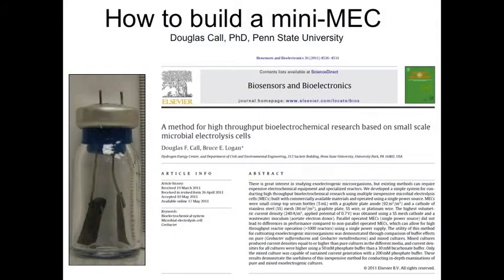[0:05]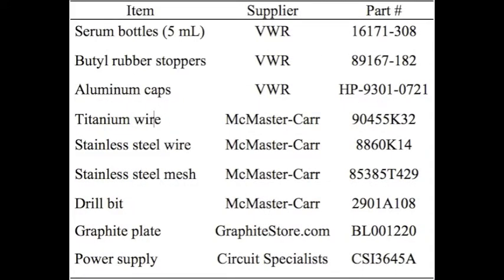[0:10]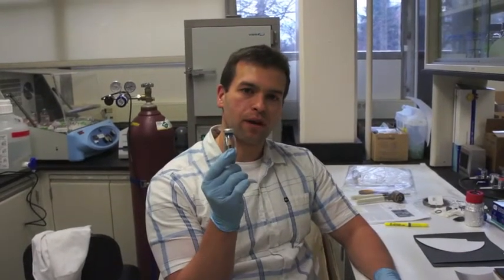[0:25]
My name is Doug Hall, and today I'm going to be talking about how you can assemble and build what we call mini-MECs, which are these small serum bottle-based MECs for doing basic work on bioelectrochemical systems in the lab.
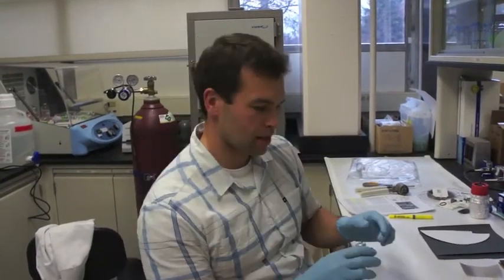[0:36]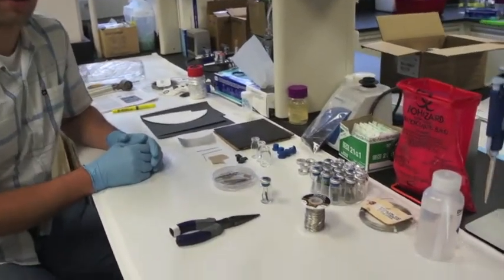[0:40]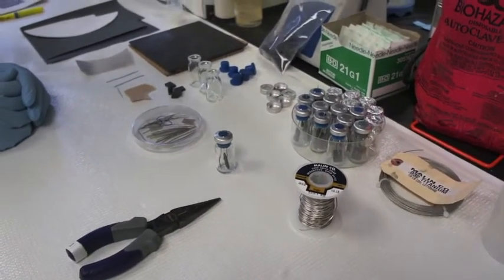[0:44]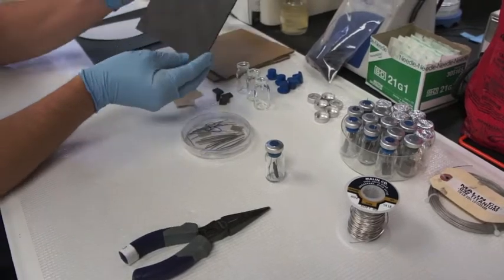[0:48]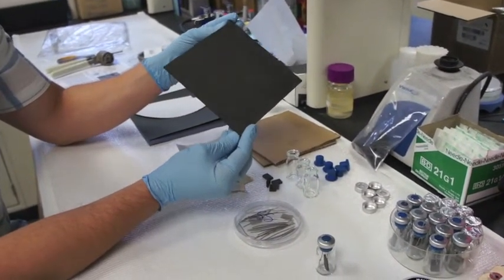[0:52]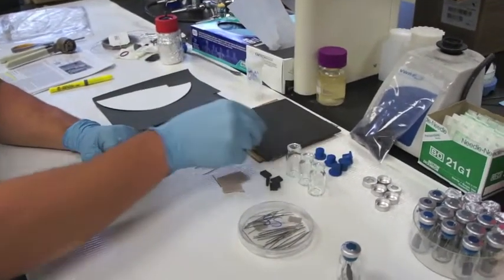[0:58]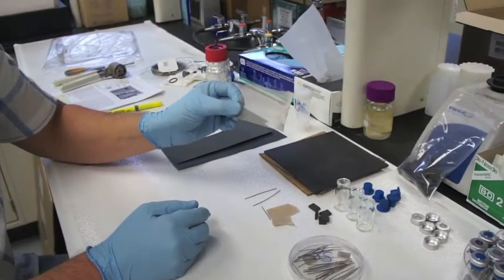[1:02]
So a couple things that you'll need in order to assemble these. All these materials are available commercially. For the anode, we use a graphite plate. This is 0.3 centimeter thickness. And for the cathode, we just use a simple stainless steel mesh.
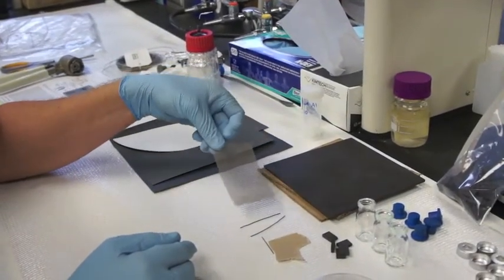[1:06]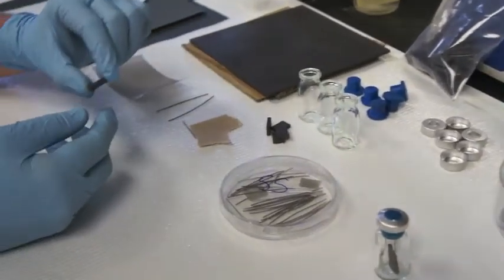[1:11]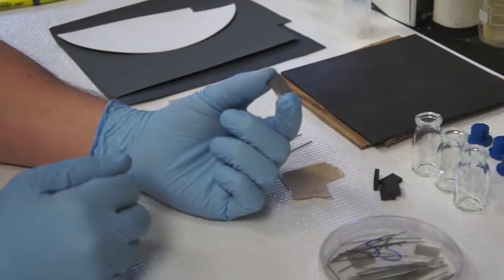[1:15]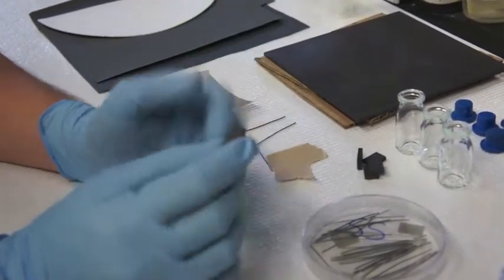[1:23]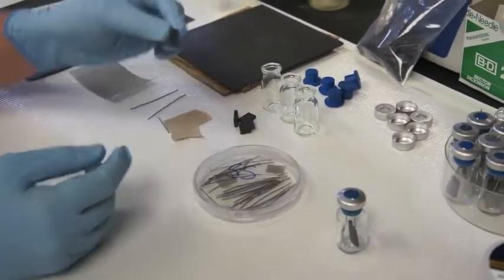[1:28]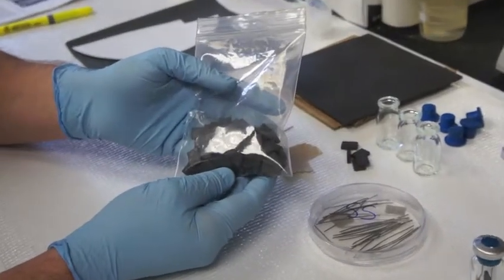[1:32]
Now, what you want to do first is get this graphite plate cut into smaller blocks. So these small blocks are 1.5 centimeter by 1 centimeter. And you don't need anything fancy done to them. They don't need to be milled. They just need to be simply cut, that's all. And so what I have is just a stock of these blocks.
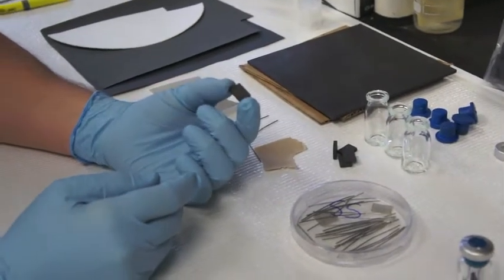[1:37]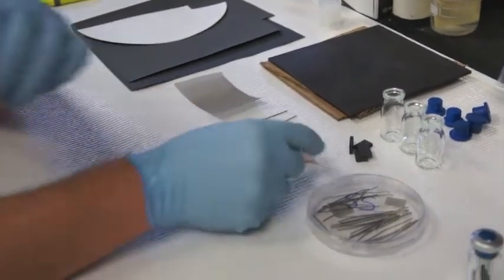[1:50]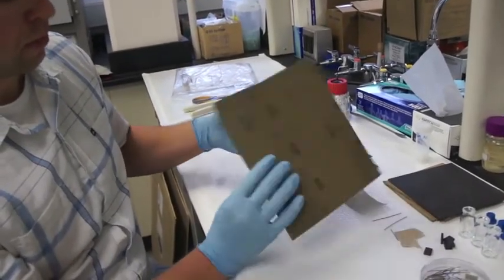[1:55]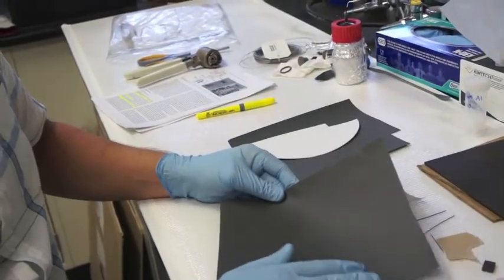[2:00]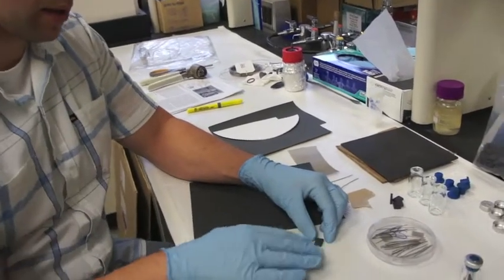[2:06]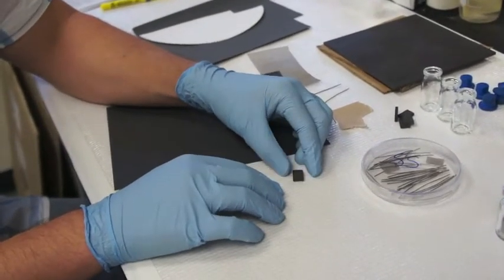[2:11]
And whenever you get a material like this graphite from a supplier, there's probably a lot of dirt, debris, contaminants, so you want to do a cleaning process. The first thing you want to do is polish them. And so I use 3 different types of sandpaper. The first type is grit size 400. This is a pretty coarse sandpaper. And so essentially you just want to, in a figure eight type motion, rough up the surface, all sides.
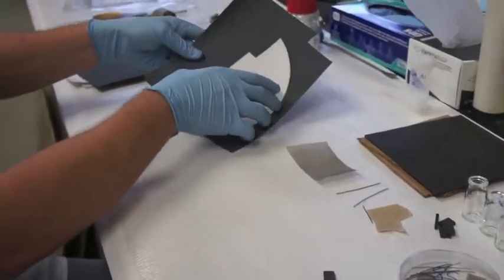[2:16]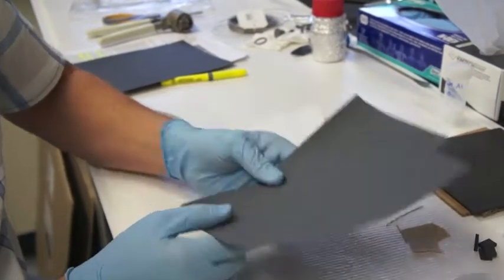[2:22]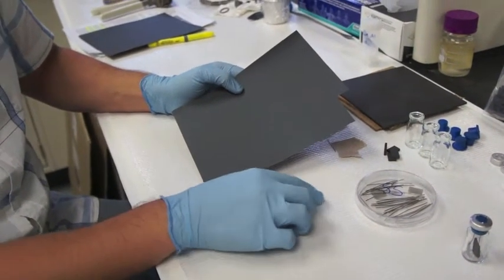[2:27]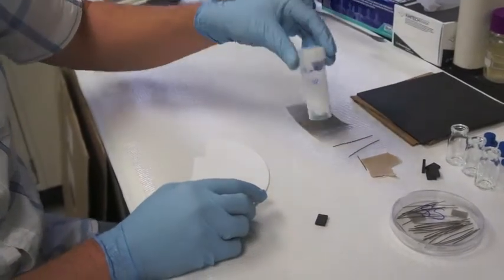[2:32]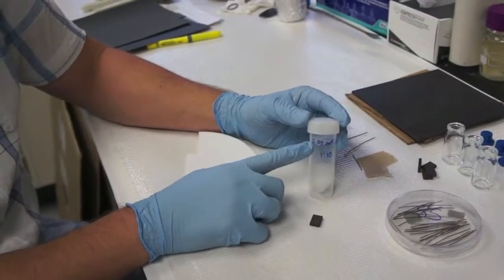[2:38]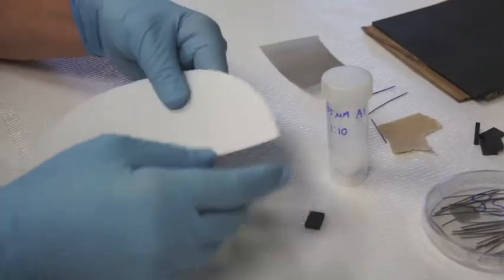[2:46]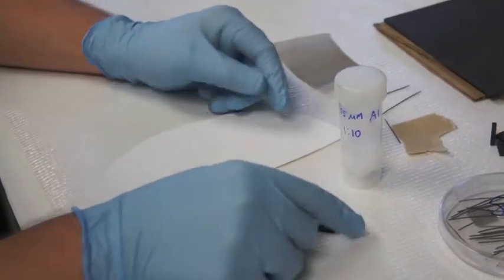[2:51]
And the next step, use a finer grit, so this is 1500, and do the same exact process of figure eight circular motions in order to polish the surface. And then the final step, what we use is an alumina particle slurry. So this one has 0.05 micrometer particles in a suspension. And all you do is just add a little drop, cut a piece of the polishing pad, and then again polish all sides.
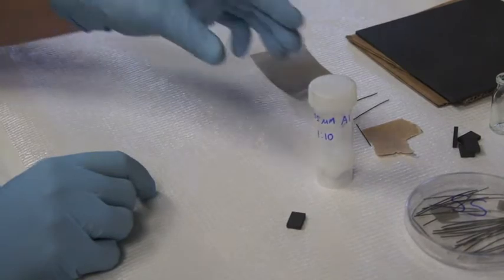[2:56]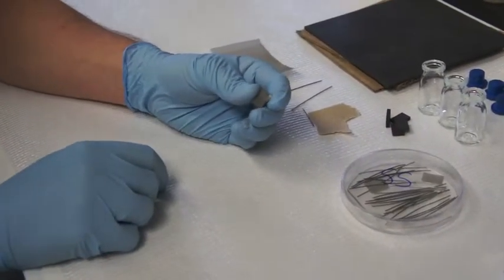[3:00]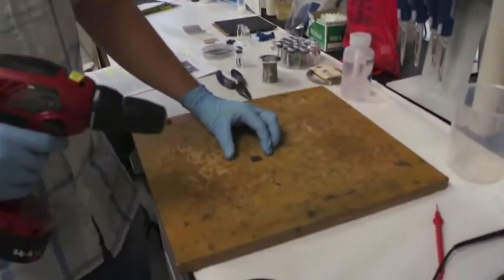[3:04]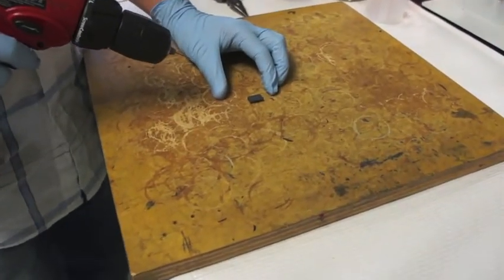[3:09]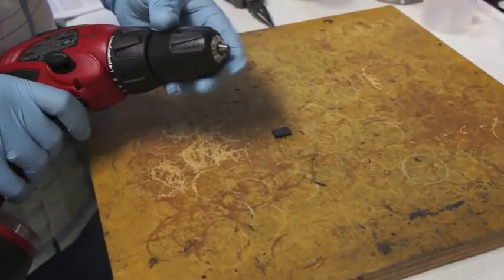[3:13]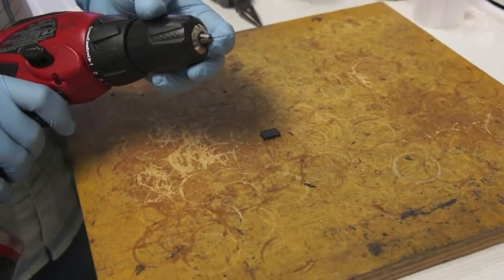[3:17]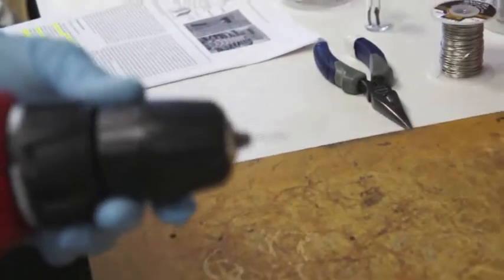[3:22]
So after you've done the polishing step, next thing we want to do is drill some holes. Alright, so the next step is we're going to drill 2 small holes near the top center of the graphite anode. And so to do that, I've got a 0.08 centimeter diameter drill bit. So it's a very small drill bit. You have to be very careful, they're very fragile.
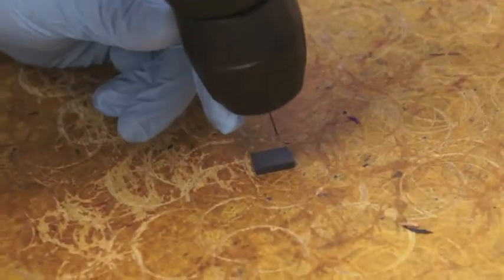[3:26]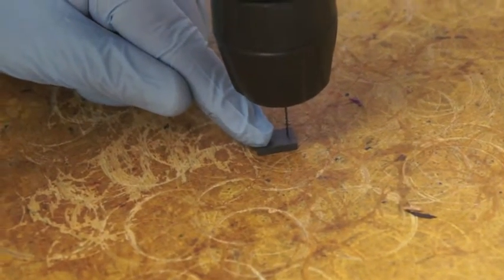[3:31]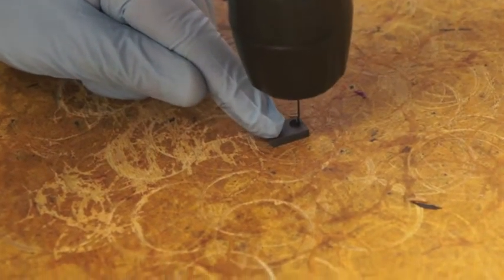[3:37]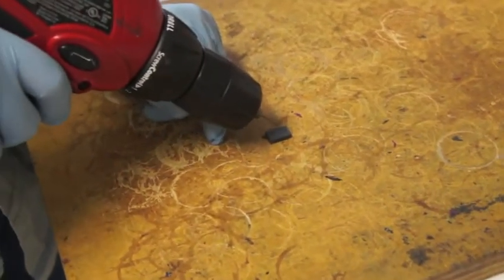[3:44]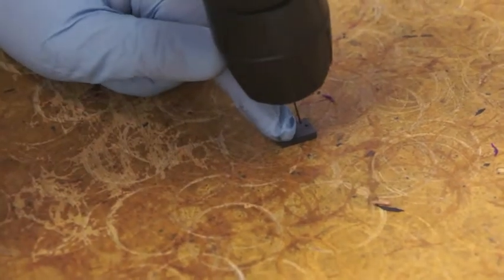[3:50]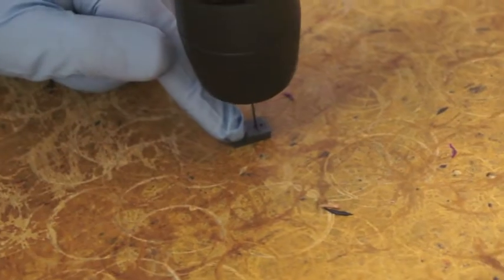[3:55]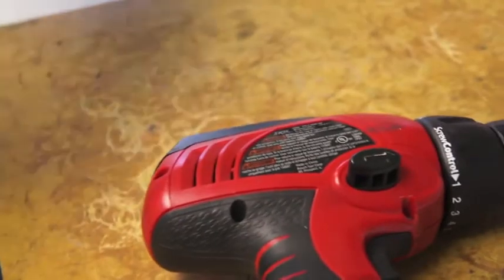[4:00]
And close to the top, you drill one hole all the way through. And then just maybe a centimeter or a fraction of a centimeter below, drill a second hole. Okay. So now we've got 2 holes near the top.
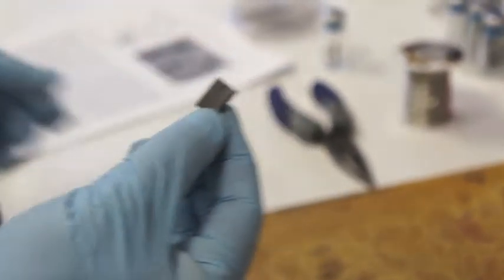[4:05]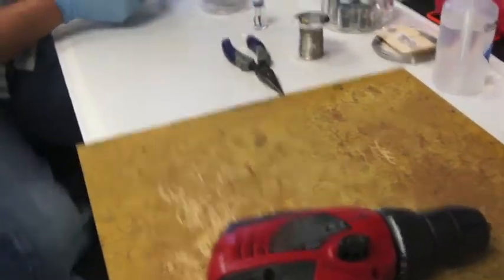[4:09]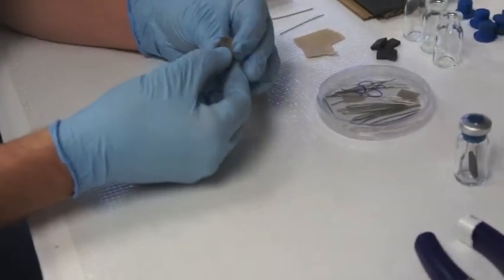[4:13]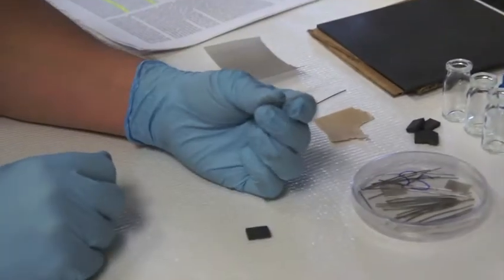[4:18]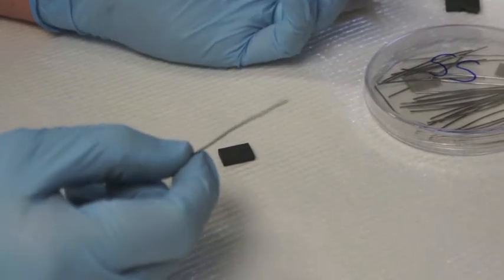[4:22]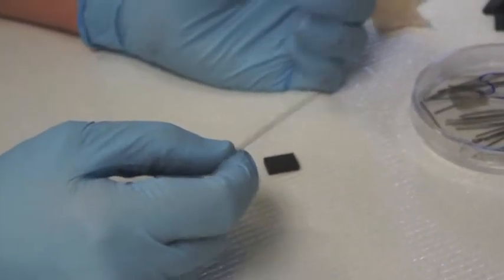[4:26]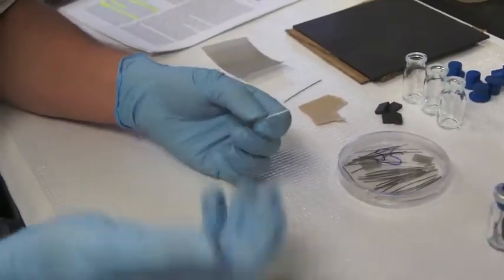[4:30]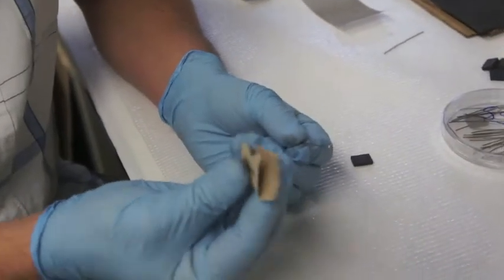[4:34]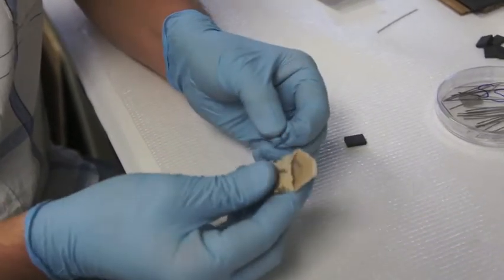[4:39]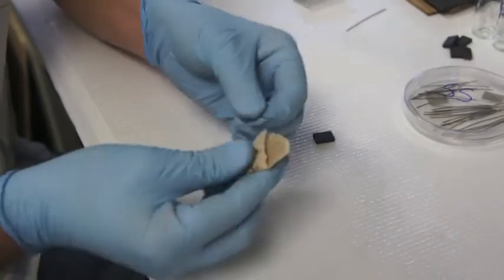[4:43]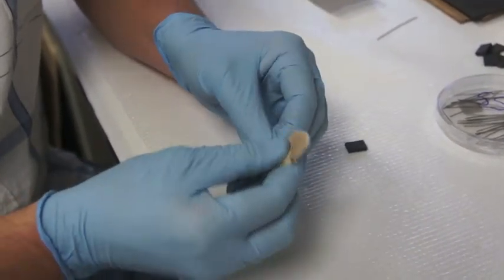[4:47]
So the next step is making an electrical connection with a wire and this anode. So to do that, we get 0.08 centimeter diameter titanium wire. So it's the same diameter as the drill bit. And the first thing you want to do, when you get something from a commercial supplier, is it's probably dirty, so you need to clean it off. So what we do is just take some sandpaper and clean off the surface. So this gets any dirt or debris that would prevent electrical contact. This gets rid of all that.
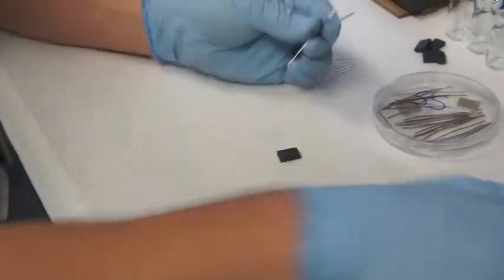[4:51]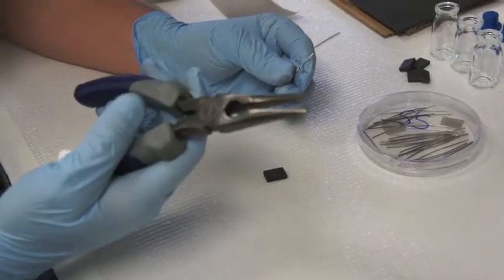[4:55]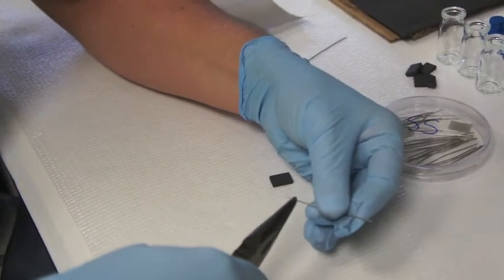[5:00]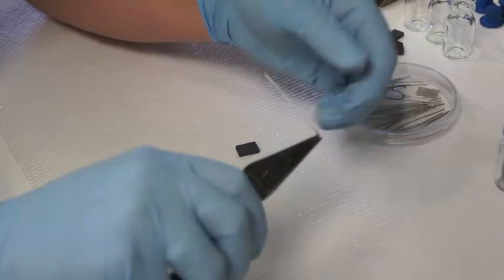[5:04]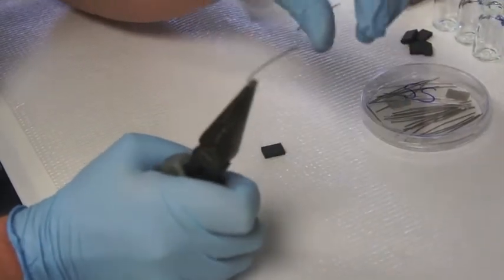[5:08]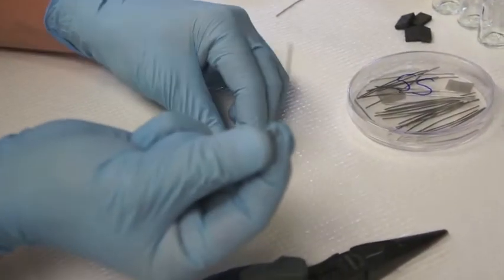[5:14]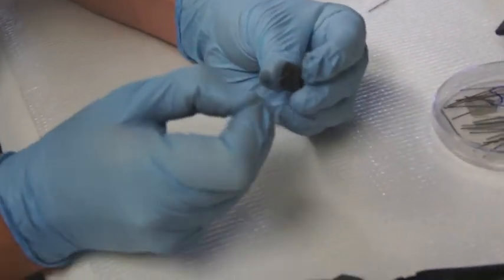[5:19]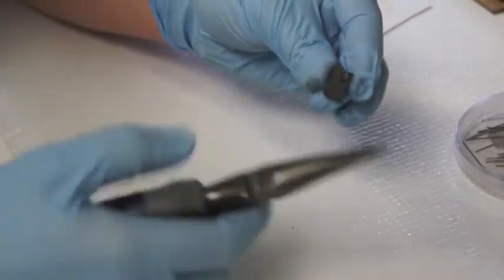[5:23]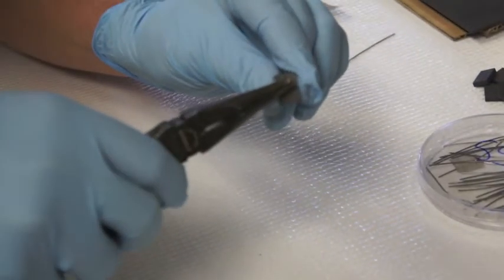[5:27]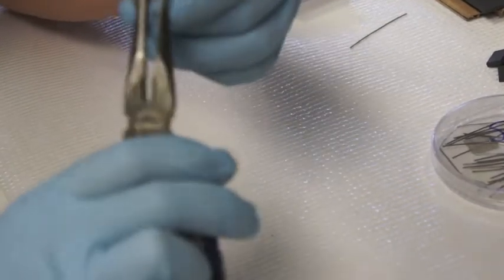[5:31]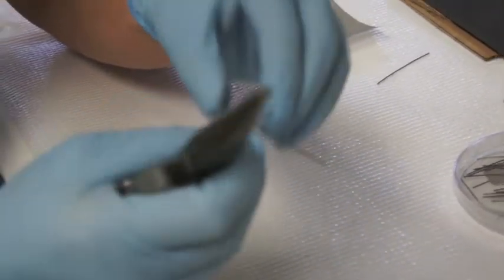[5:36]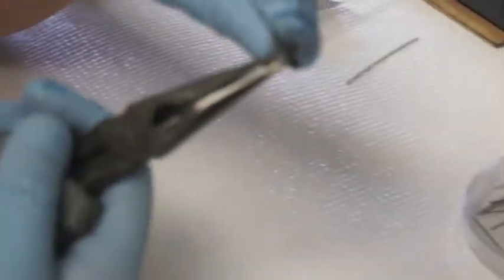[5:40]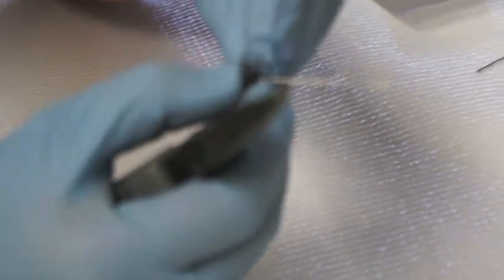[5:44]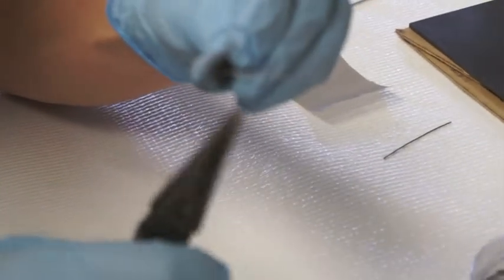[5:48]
And then what I find handy is a pair of needle nose pliers like these. And if you just take close to the end, like this, and you bend it into a J, leaving a little bit hanging over, you now insert the long portion of the J through the top. And it's a tight fit, which it should be, because you want a good electrical connection. And then insert the lower part into the second hole. You might need to adjust this here to make sure that it slides through. There we go.
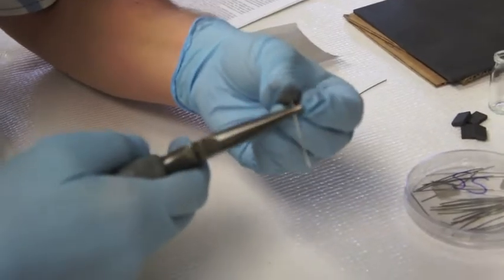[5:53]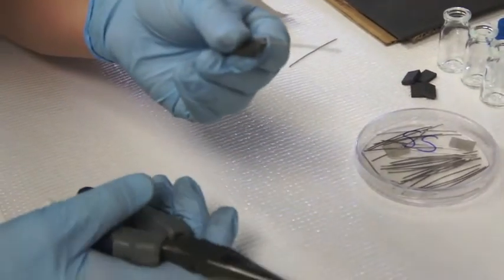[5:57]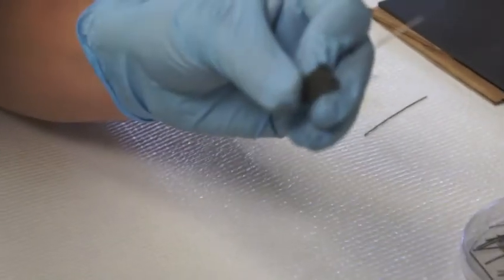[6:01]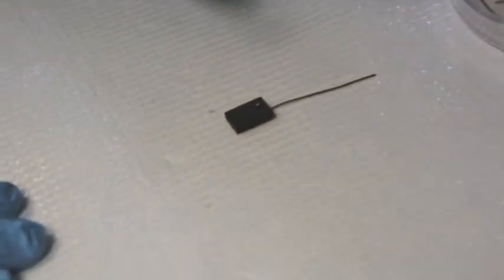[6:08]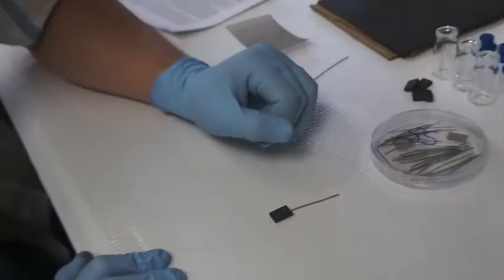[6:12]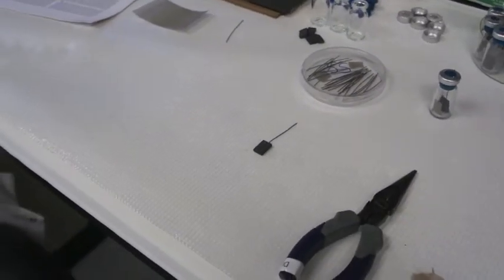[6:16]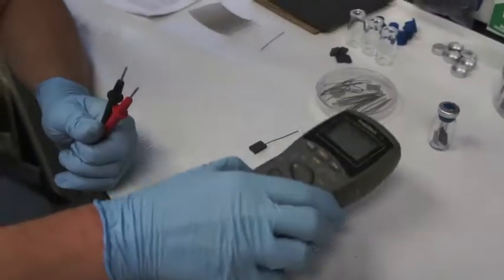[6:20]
And then when you're done, bend this up. And then in the back, just fold this down so it's flush against the electrode. So this ensures good contact. And to make sure that you do have a good contact, you want to test it, just using a handheld multimeter.
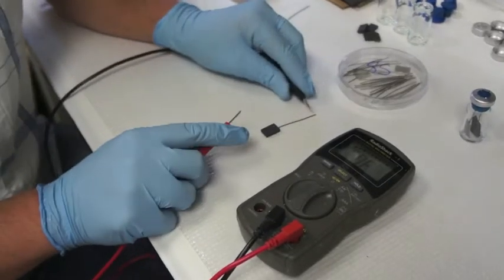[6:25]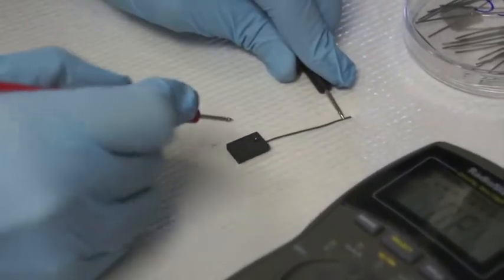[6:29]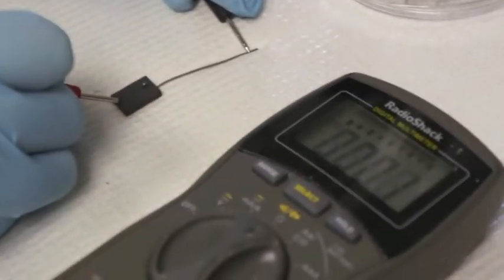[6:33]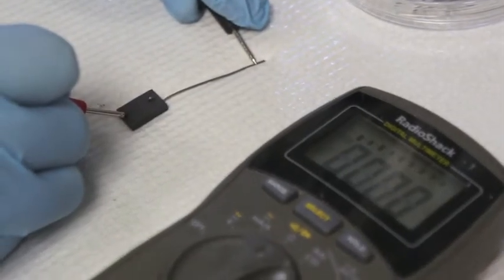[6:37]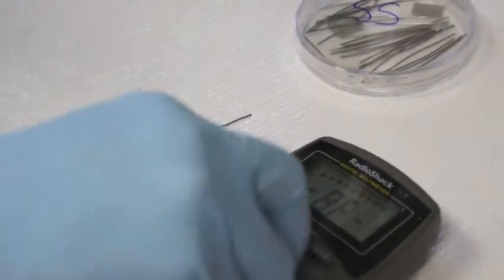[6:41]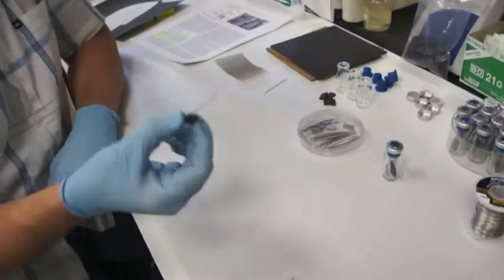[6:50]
Touch at the top of the wire, down at the bottom of the electrode, and you can see our contact resistance is essentially zero. And that's what you want. You want very low contact resistance. If you get anything above 0.5, you may want to discard that one or check the connection. So our anodes are now done.
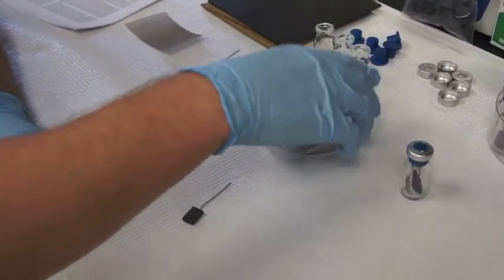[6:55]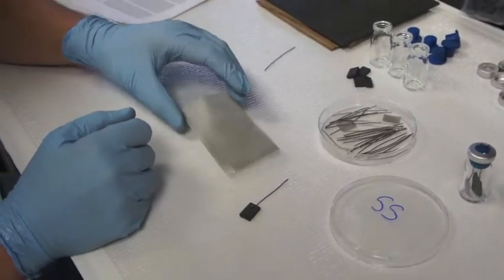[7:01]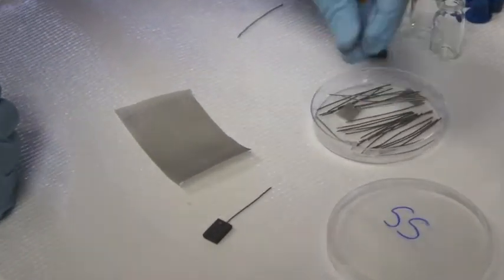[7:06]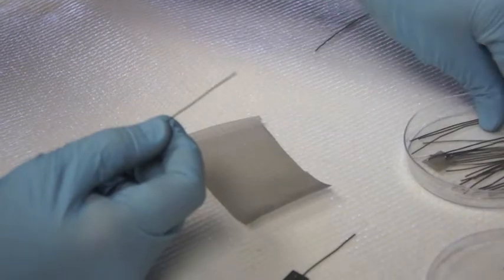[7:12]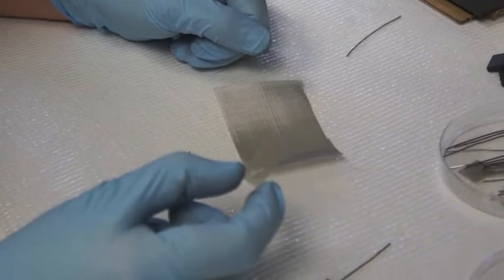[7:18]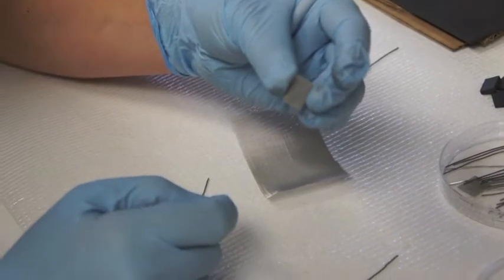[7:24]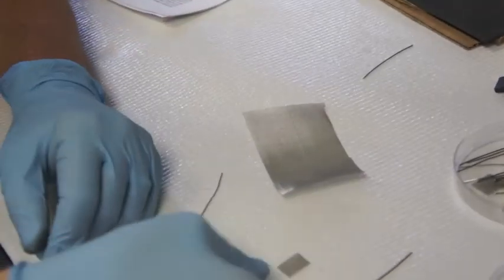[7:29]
Now we need to build our cathodes. So for the cathode, again, like I said, we're using stainless steel mesh. It provides a very large surface area as a cathode. And I also use stainless steel wire to connect to the stainless steel mesh. So again, use the same size as the graphite anode: 1.5 centimeters long by 0.5 centimeter. I believe that's 1 centimeter wide. And then using that same drill bit, you just drill one hole in the top.
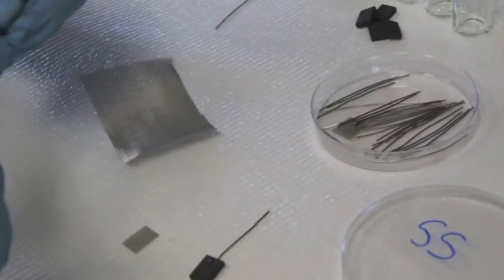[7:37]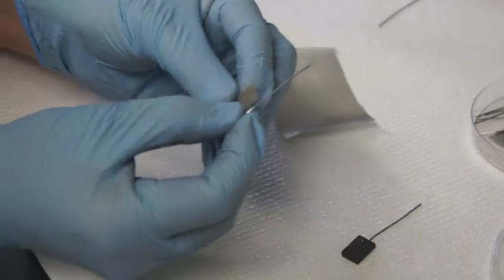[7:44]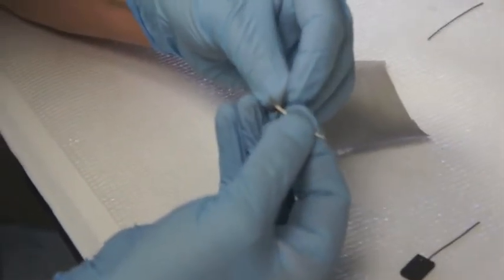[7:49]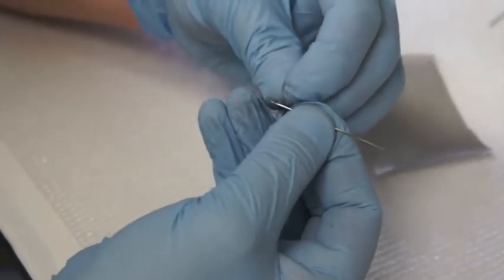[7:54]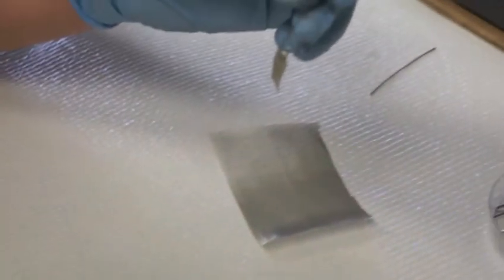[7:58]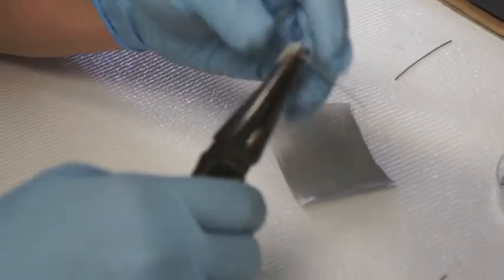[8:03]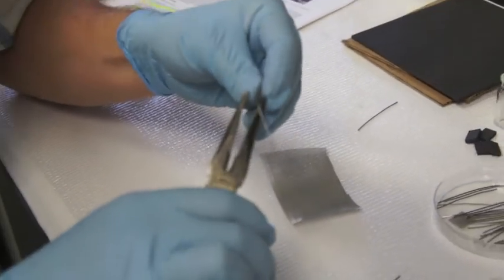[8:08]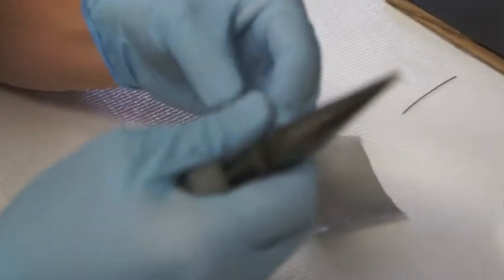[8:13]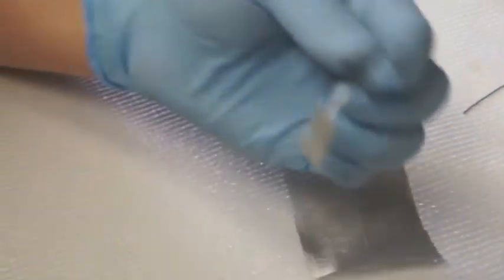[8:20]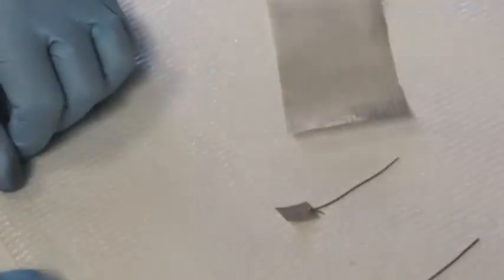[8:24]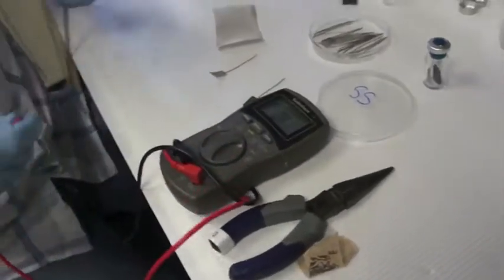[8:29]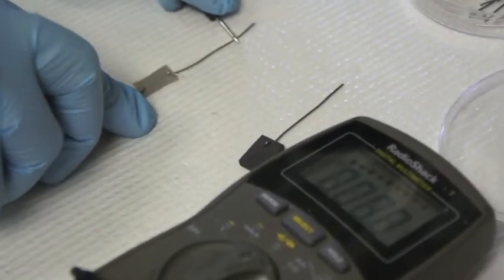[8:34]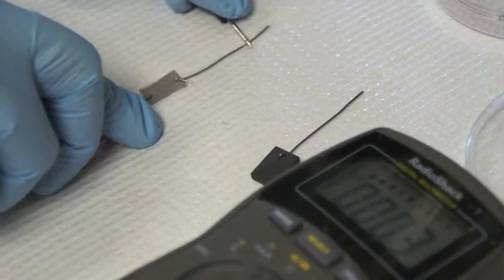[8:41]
Take your stainless steel wire. Insert the stainless steel through the hole. Now it's a little loose, so what you have to do now is crimp it. There we go. So once you have it crimped, you can tell it's really tight. So again, check the contact resistance. And we're around 0.2 to 0.3. So we're below 0.5, so this electrode's good.
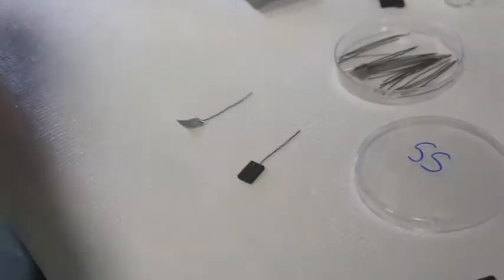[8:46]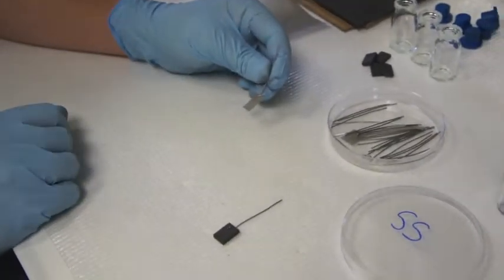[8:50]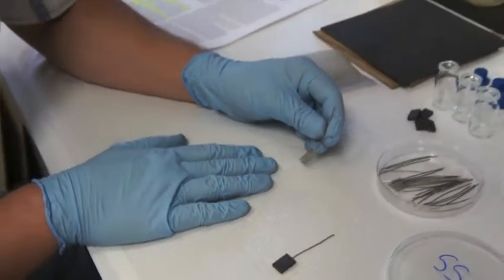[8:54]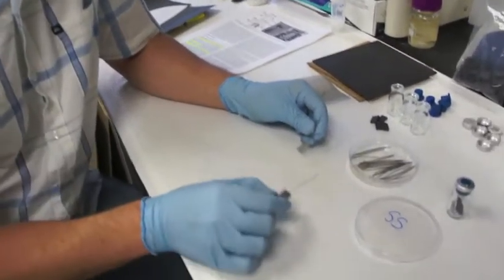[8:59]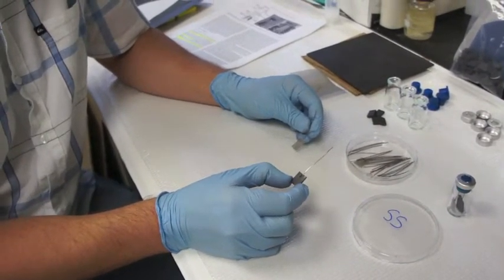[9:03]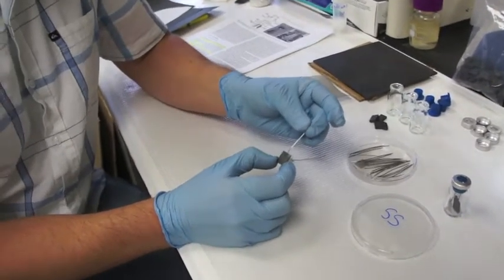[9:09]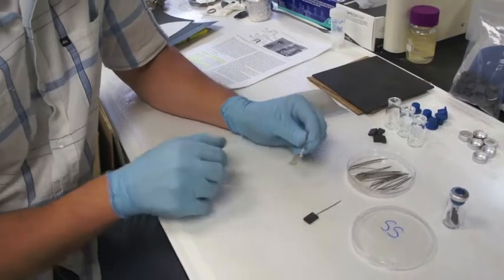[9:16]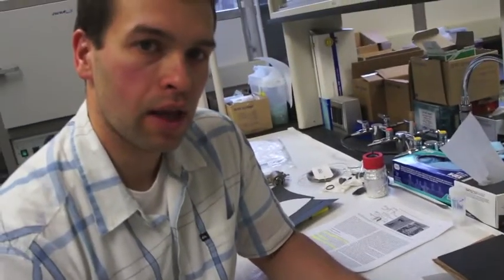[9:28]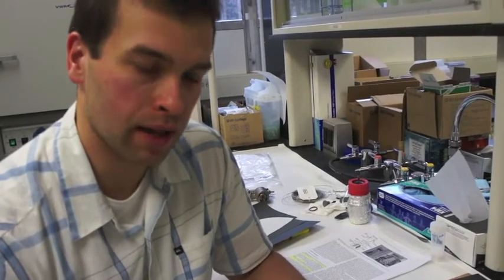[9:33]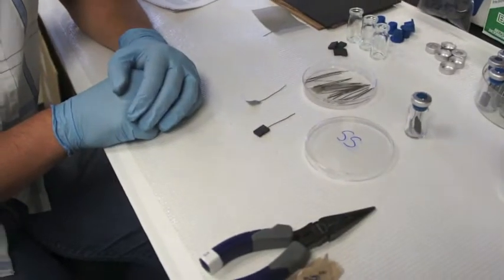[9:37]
Now, one thing I didn't mention was cleaning the stainless steel. You can't soak stainless steel in acid. To clean the graphite, you can soak it in 1 molar hydrochloric acid overnight. And you can do it with the titanium attached if you want, because titanium is resistant to corrosion and acid. But do not soak stainless steel in acid because it's corrosive. So to clean the stainless steel, typically what I do is rinse it a couple times in DI water, and then also rinse it in ethanol. And then finally rinse with DI at the end. All right. So we've got our anode, we've got our cathode.
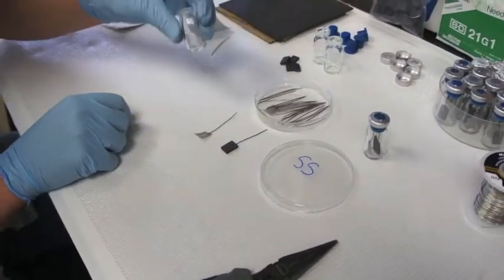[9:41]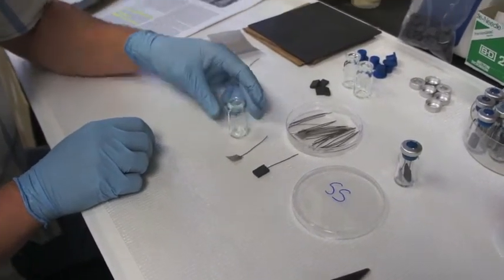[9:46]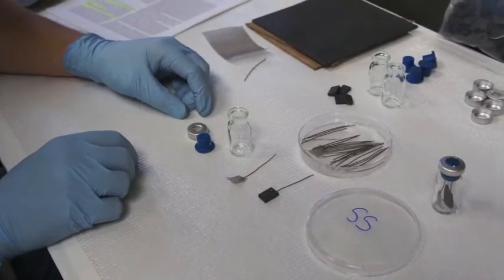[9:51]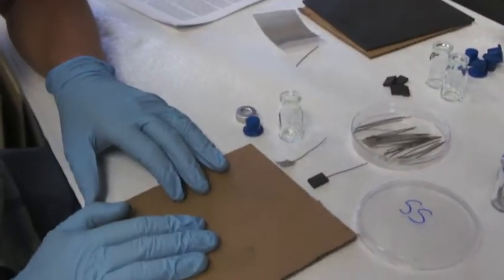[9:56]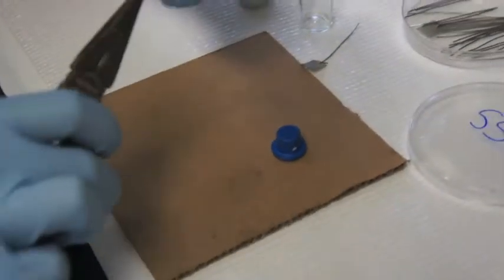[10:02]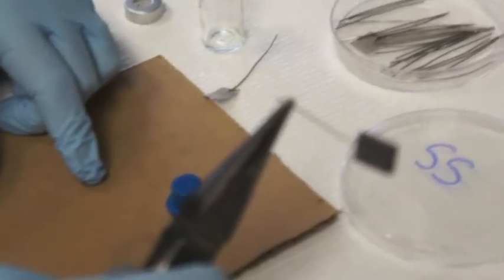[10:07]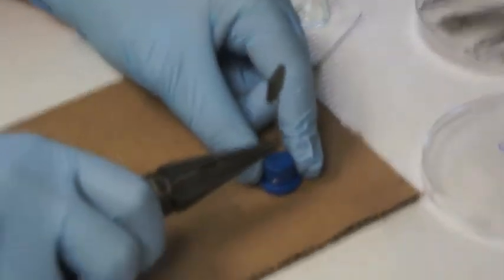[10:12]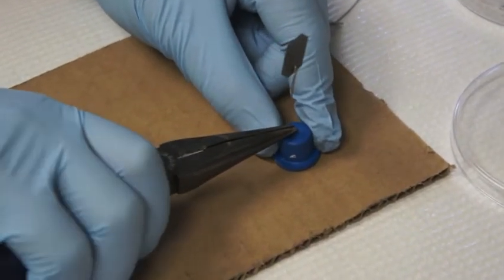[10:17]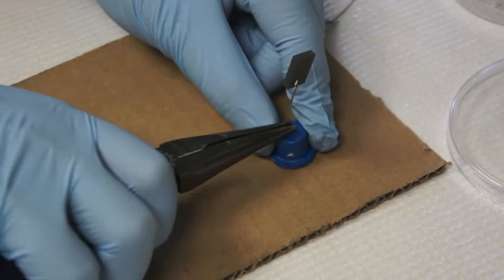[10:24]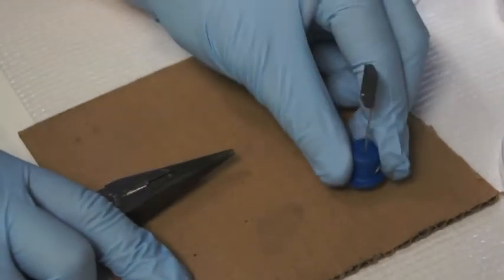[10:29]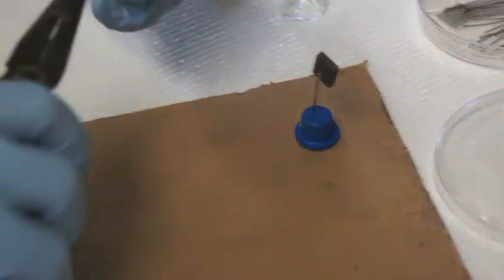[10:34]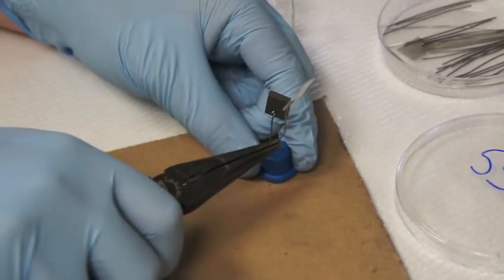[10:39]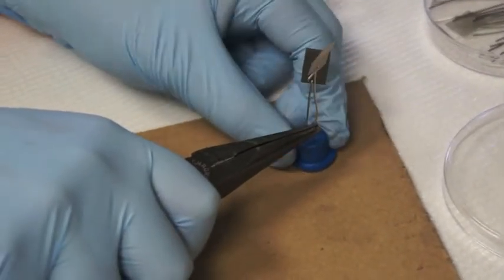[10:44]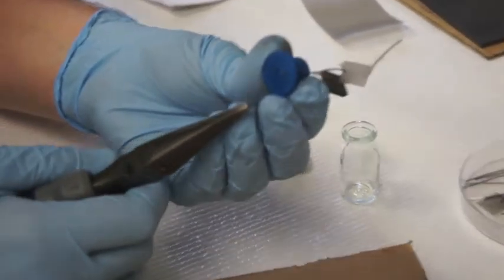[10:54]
Our reactors are just these small 5 mL serum bottles, stoppers, and the aluminum caps to seal the containers. So what I find handy is to just take a piece of cardboard and put your stopper upside down. Again, using your needle nose pliers, grab right about here, so you've got a portion sticking out, and just walk it through the stopper. You'll hear it. There it goes. Go through the cardboard. And then just repeat the same thing with the stainless steel mesh. Just walking it through. There. So now we've got our two electrodes sticking through here.
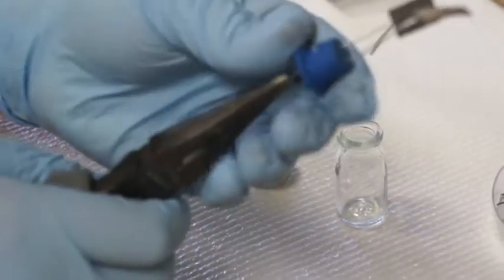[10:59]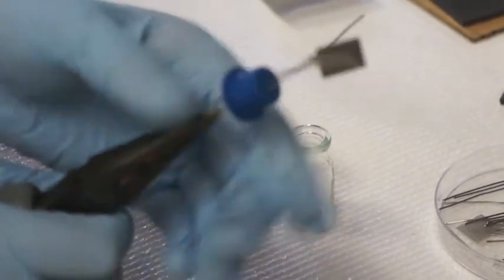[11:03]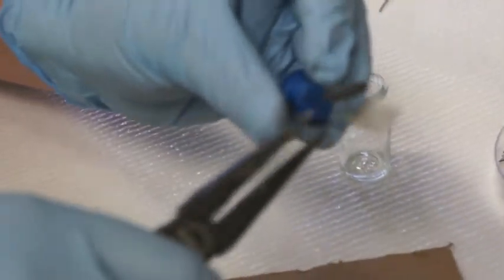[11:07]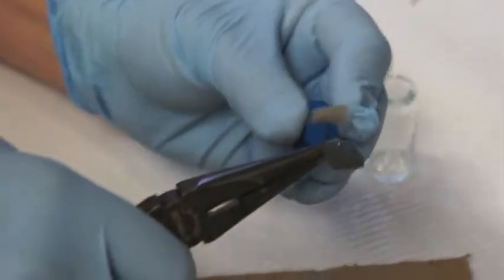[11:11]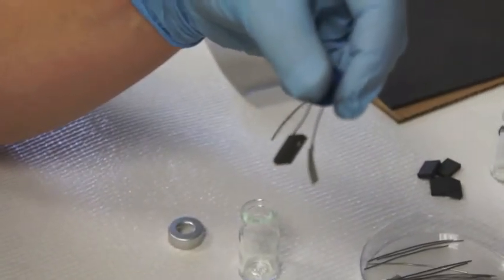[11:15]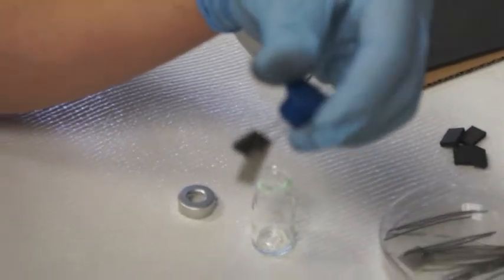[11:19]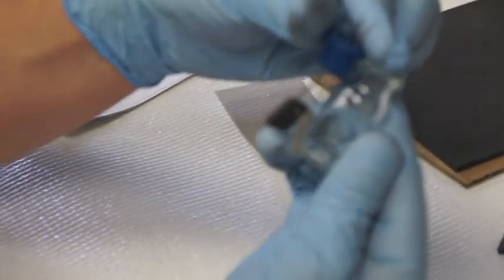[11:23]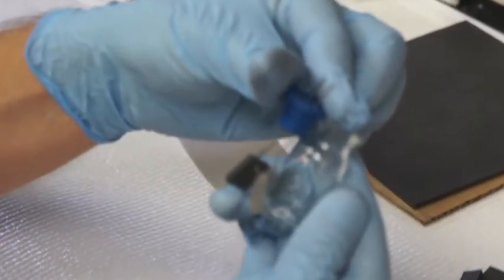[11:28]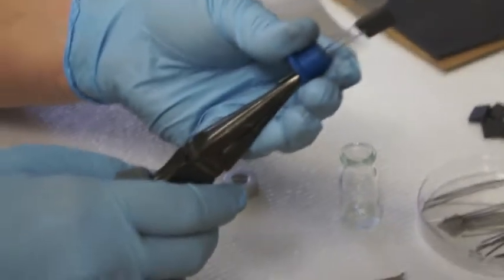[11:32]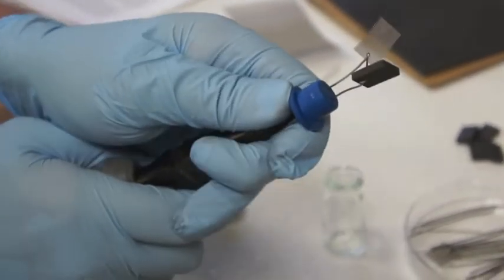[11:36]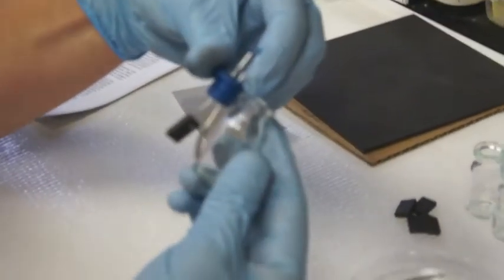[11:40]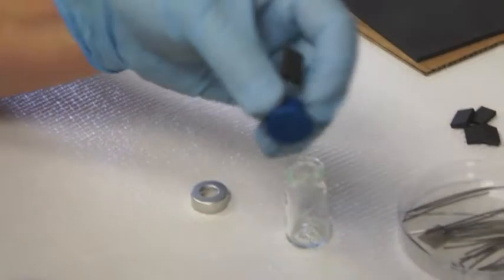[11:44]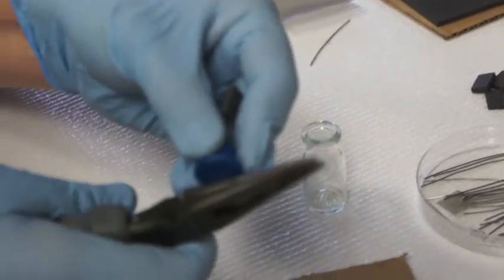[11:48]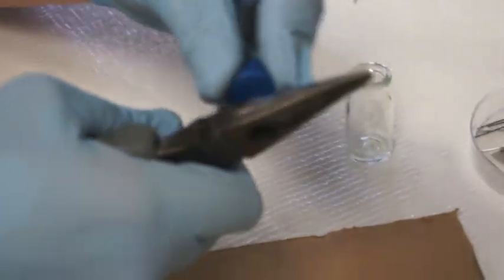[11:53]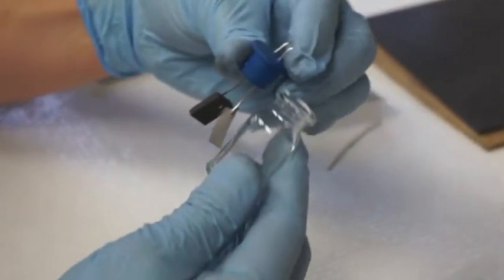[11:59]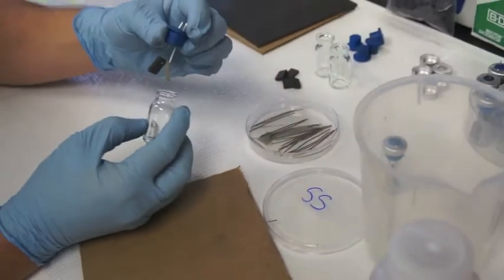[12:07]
So you just want to try to even out the spacing. Make sure that the electrodes are not touching. That's very important, because if they do touch, then you'll have a short circuit. And what I do, to gauge what height these electrodes need to be at, is put the stopper flush with the top, and you can see they're still hanging down a little too far. So pull them up a little more. That looks pretty good. So what I do now is trim off some of this excess wire.
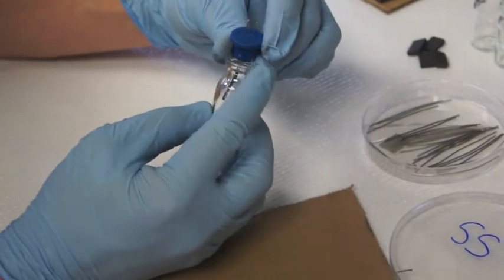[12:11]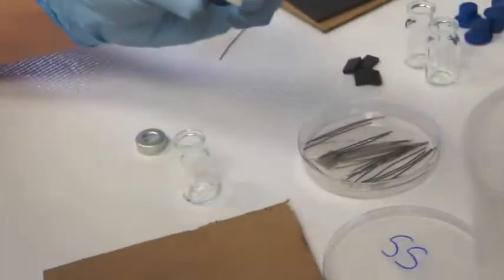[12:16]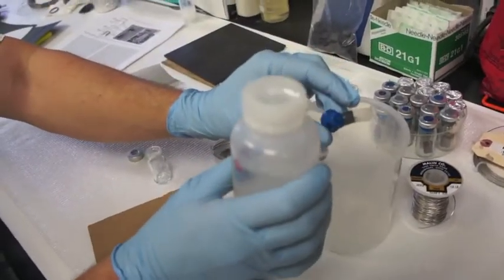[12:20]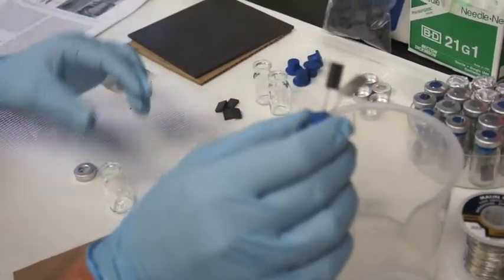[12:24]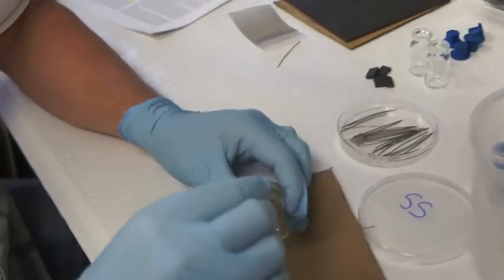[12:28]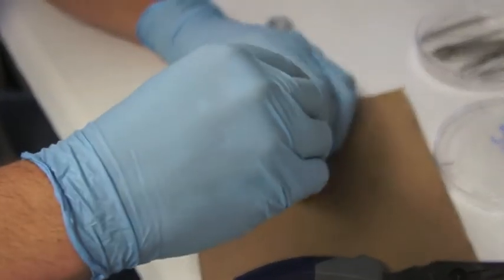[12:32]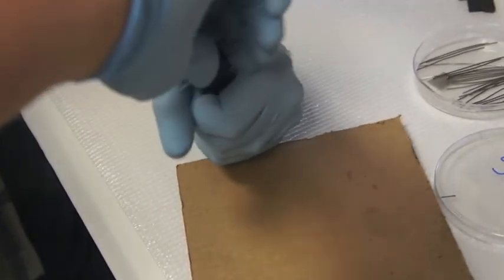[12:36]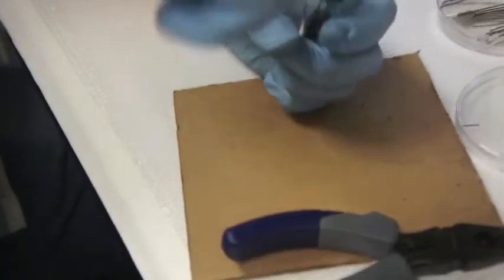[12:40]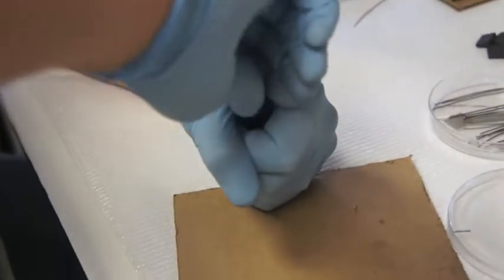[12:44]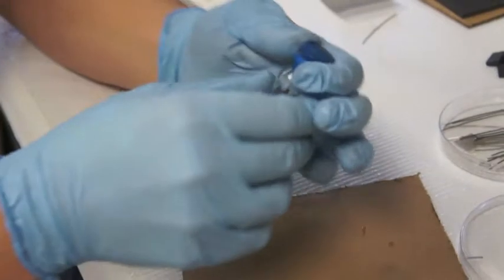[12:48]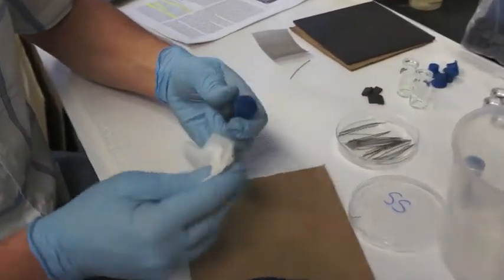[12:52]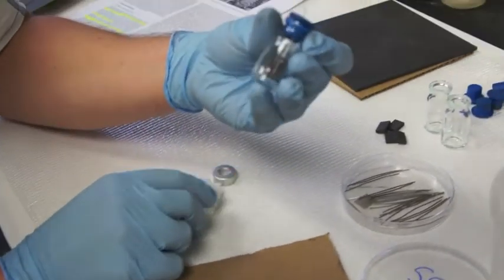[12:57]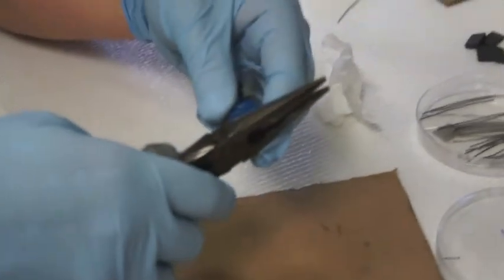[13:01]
And one of the secrets to getting these stoppers into the glass vial is to not try to do it dry. If you try to get these inside dry, it just won't work. So what I do is just wet them a little bit. You just take a little DI water and wet the edges just a bit. You want to squeeze the electrodes together, put them in first, and then slowly, in a circular motion, just push the stopper down. Sometimes I find it helps to use a napkin or Kim wipe. It gives you a little extra friction there. All right, so now we've got our electrodes in there. Trim off the wire just a little more.
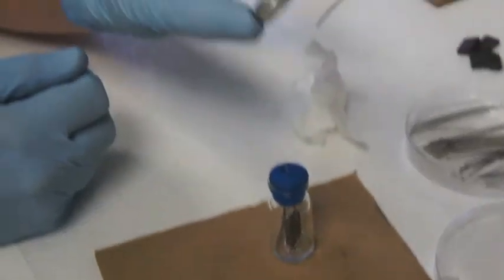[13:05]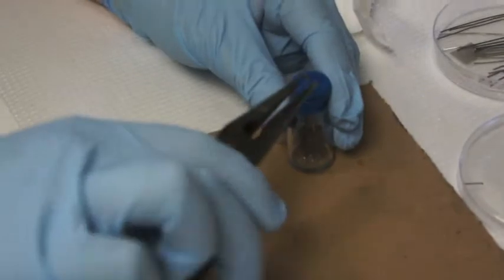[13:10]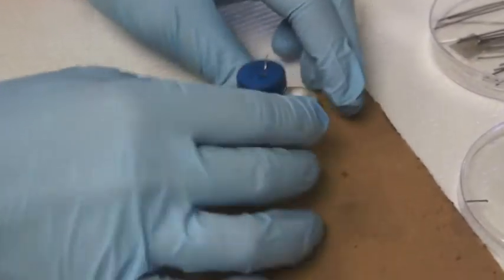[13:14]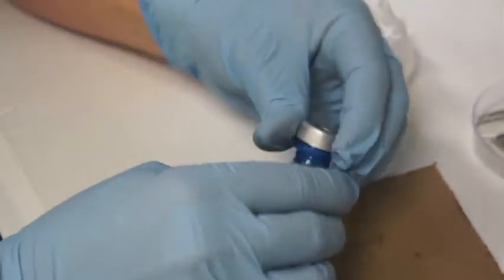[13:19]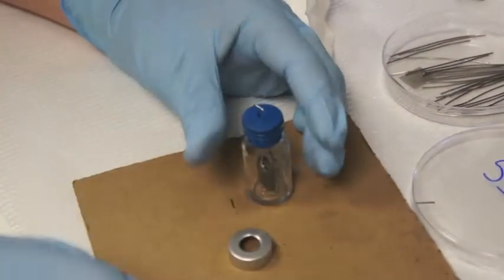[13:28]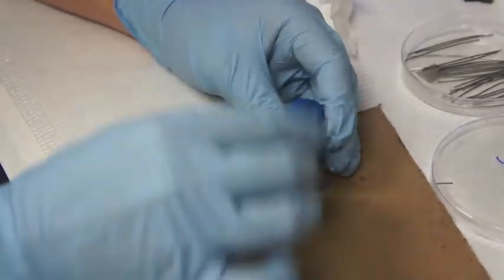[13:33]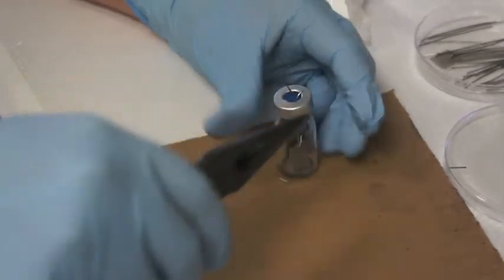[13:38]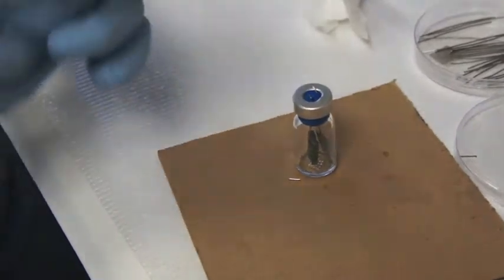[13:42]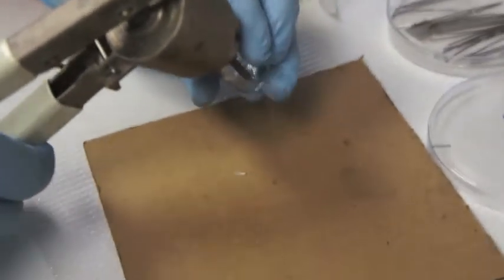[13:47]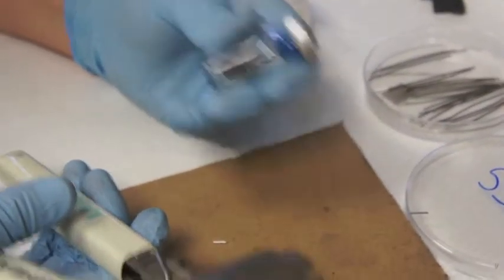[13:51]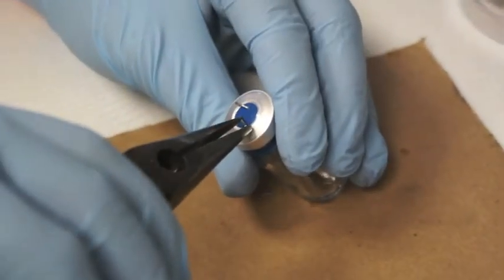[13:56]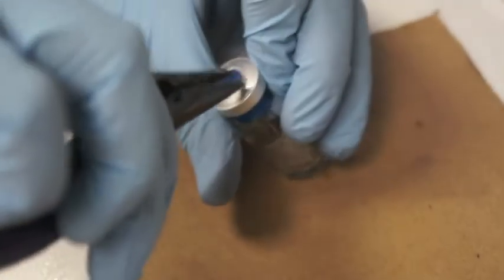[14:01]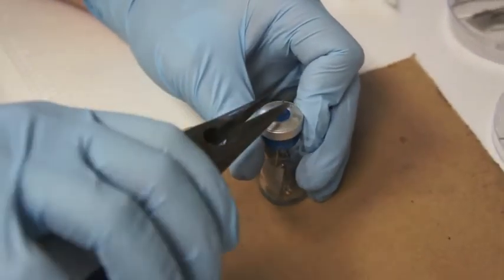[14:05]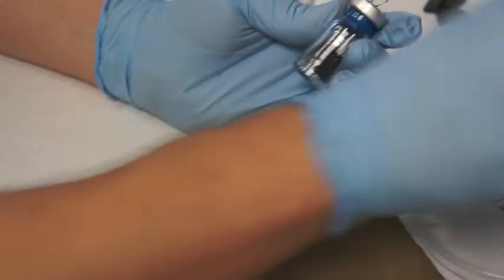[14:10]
And the next step is sealing it with our aluminum crimp cap. To make it easier, what I do is bend the wires down. Put the crimp top on. Lift this one up here first before I do that. Oops. There we go. Okay. Now bend them down so that you can get the crimper. And then now you can bend the wires back up. All right, so that's it. We just made one.
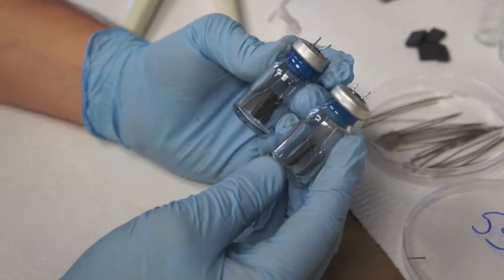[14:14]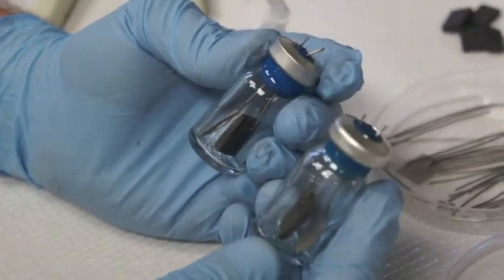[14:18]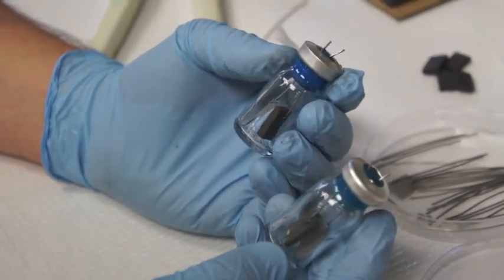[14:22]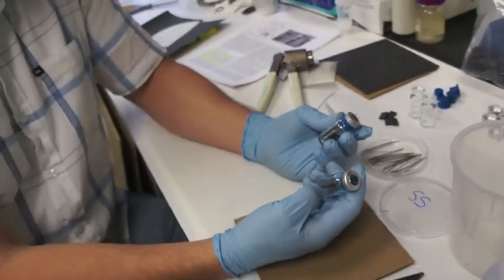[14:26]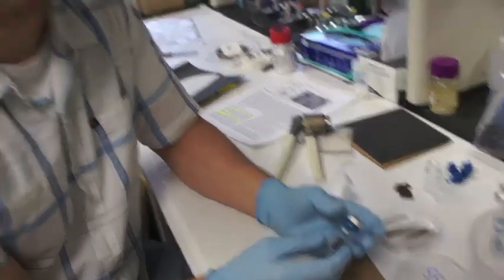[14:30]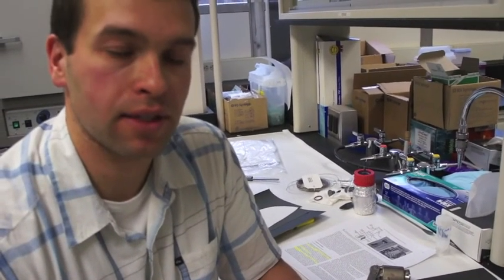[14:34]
Very simple, easy to assemble, and the entire reactor that you're looking at here costs $1.50 each, taking into account all the materials. So the next thing I'm going to show you is, if you're interested in doing anaerobic work, how to sparge the headspace and sterilize these reactors.